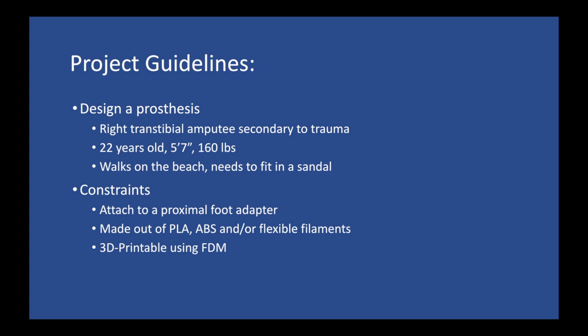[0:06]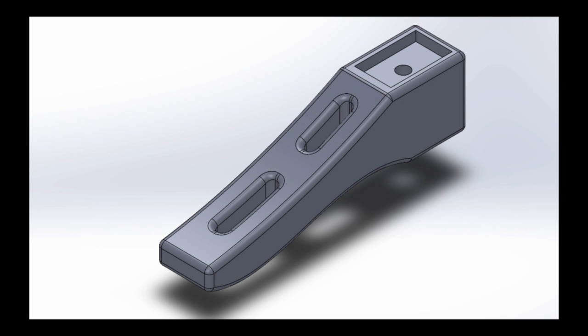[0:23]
For this project, we were tasked with designing a prosthesis for a right transtibial amputee. The constraints were that the prosthetic foot fit into a sandal, be able to attach to a proximal foot adapter, be made out of PLA, ABS, or some flexible filament such as NinjaFlex, and be 3D printable using FDM-based 3D printers. So this is a picture of our very first CAD design.
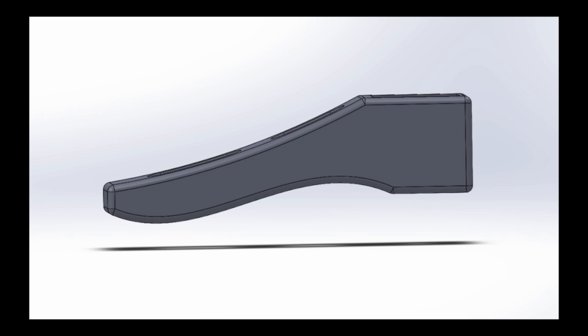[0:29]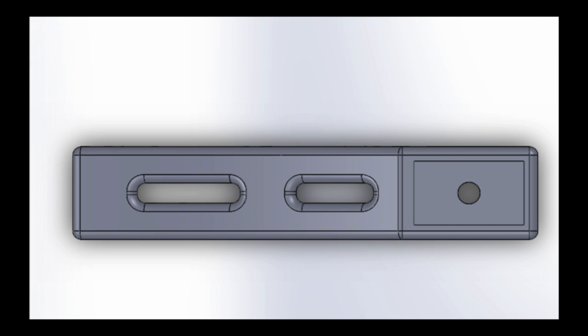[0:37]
We took initial measurements of the sandal and tried to create a generic foot design to fit inside of it. From the side view, you can see that the forefoot descends farther than the heel. This is due to the design of the sandal, which has a raised heel. In order to fit the adapter, we created a cutout in the heel. At this point in the design, we were not taking into account gait phases and rocker effects.
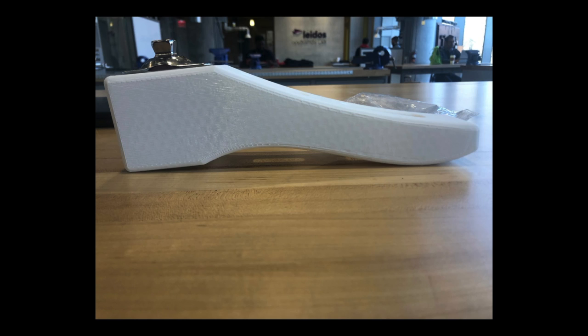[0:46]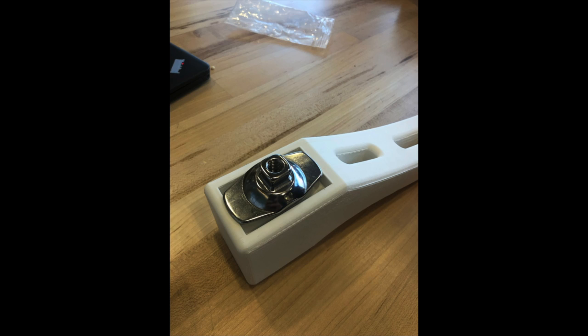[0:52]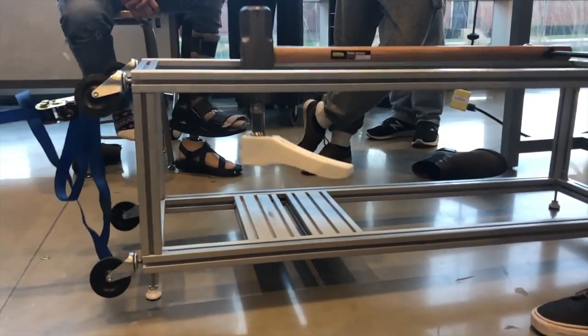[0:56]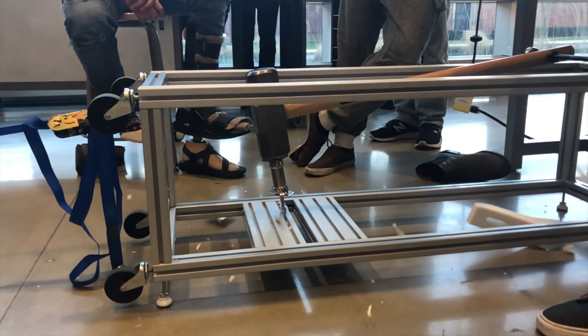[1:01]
We printed the foot at 15% hexagonal infill. We noticed immediately the disparity between heel and toe depth as well as the length of the foot. Another issue with the foot was that the dimensions of the cutout were too small to fit the adapter. During smash testing, the foot was obliterated due primarily to its structurally weak heel. A photo of the defunct would-be prosthesis shows the heel sheared vertically along the plane parallel to the print bed.
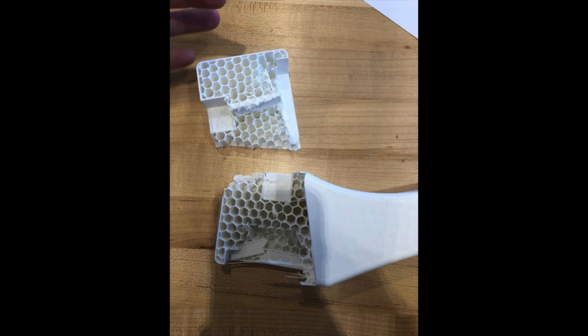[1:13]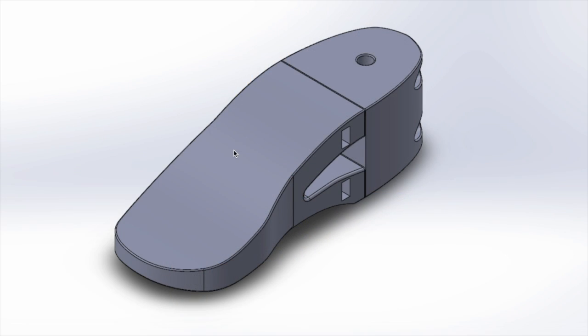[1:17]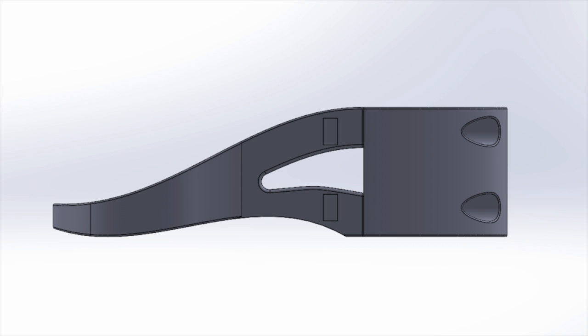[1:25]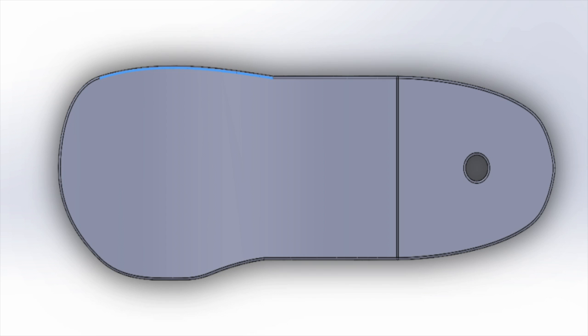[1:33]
We knew that, in order to have a viable foot, we had to dramatically strengthen the heel and improve shock absorption. For our second iteration, we adopted a modular design with separate heel and forefoot pieces. The two pieces connected by four 10mm steel bolts. These bolts increased the structural rigidity of the prosthesis and allowed it to better accommodate force applied during the loading response phase of the gait.
The heel cutout was also widened to better accommodate the adapter. We increased the infill density to 20% and added a NinjaFlex insert on the bottom of the heel to improve shock absorption and allow for a heel rocker effect.
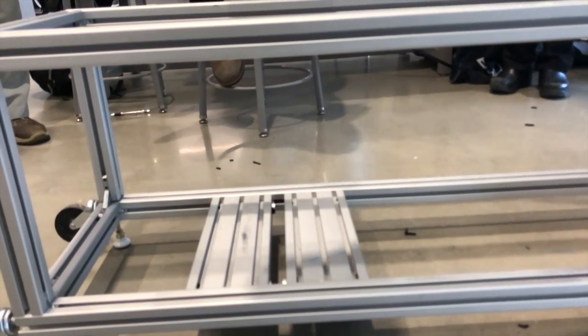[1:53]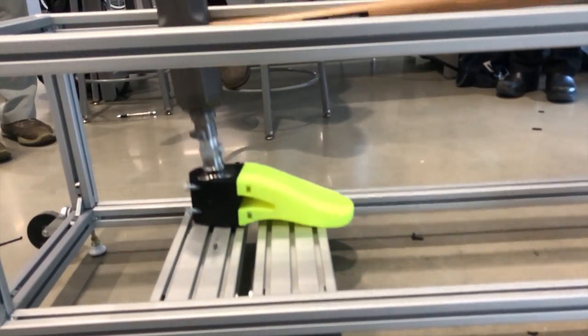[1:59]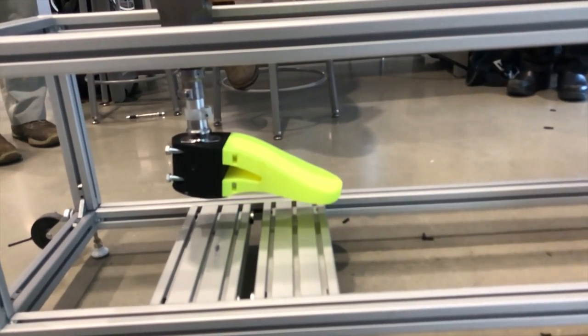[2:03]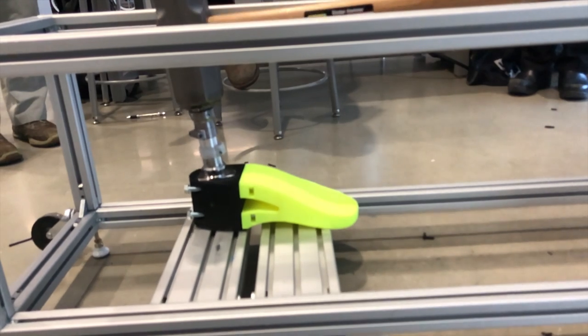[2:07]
So for the second smash test, the foot survived the smash test under normal conditions but failed when more force was applied. The design introduces an unwanted stress point in the forefoot, causing it to shear during the terminal stance phase of gait. It also did not fit into the sandal due to its bulkhead profile.
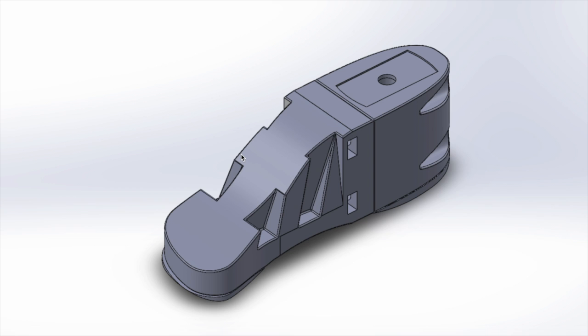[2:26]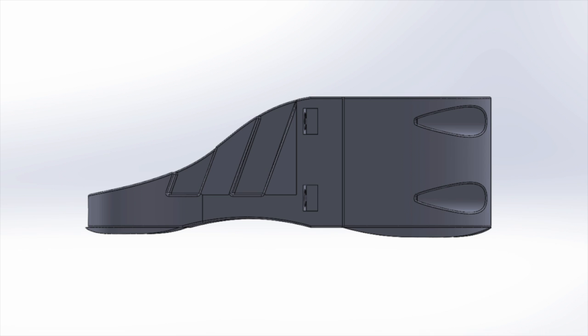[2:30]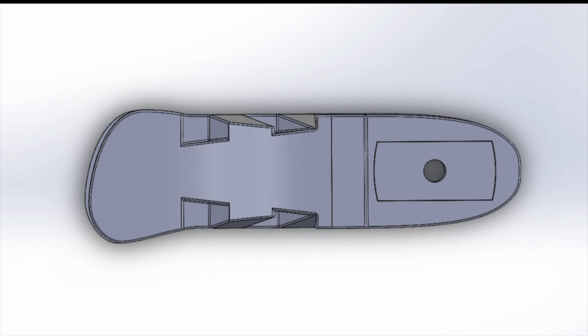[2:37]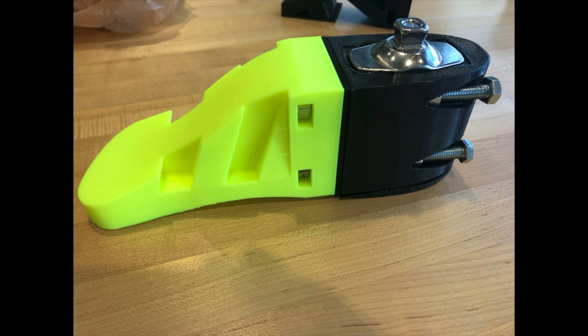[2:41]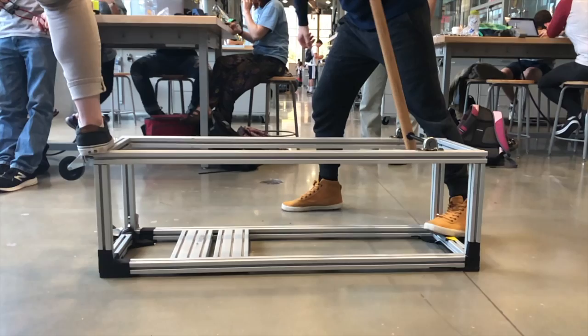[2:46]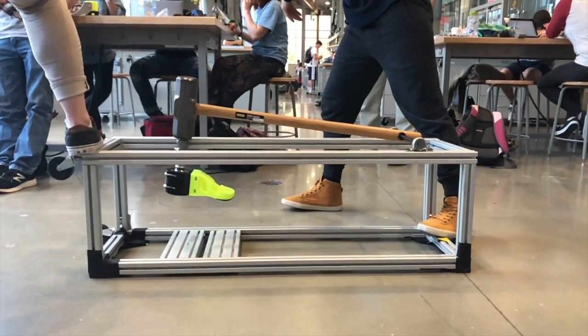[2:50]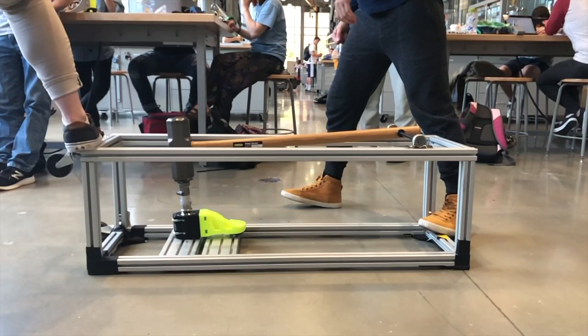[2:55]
For the third iteration, we shrunk the size of the heel and altered the forefoot to make it more solid. The addition of a NinjaFlex insert under the toe and in between the two components provided for toe and ankle rocker effects. We also added a piece of NinjaFlex insert underneath the adapter to reduce shearing. The new foot was significantly more sturdy than previous iterations. It held up during testing despite considerable force being applied.
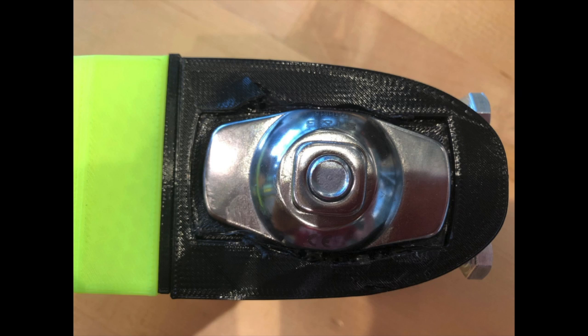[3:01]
During walk testing, the heel and forefoot held up very well to the large stresses applied during the loading response and terminal stance phases of the gait. The toe, heel, and ankle rocker effects were also noticeable to the tester. However, the foot had a tendency to pronate. This pronation was due to stresses in the adapter cutout.
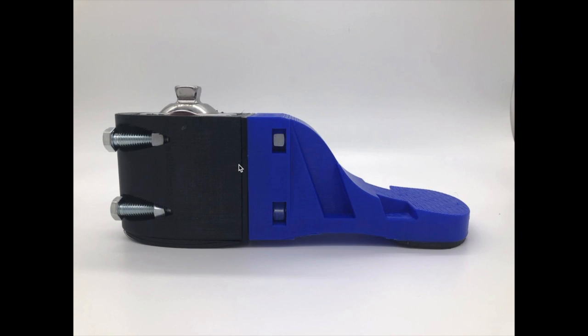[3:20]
This design flaw could be remedied by increasing infill in that region of the heel, or by introducing a flexible filament as a buffer between the adapter and the cutout walls. This is our final design. The size of the forefoot has been reduced to improve fit in the sandal. The design can further be improved by reducing the diameter of the bolts, as it has a safety factor that is too high for the prosthesis.